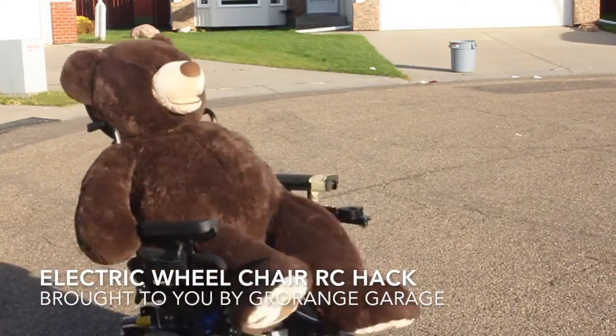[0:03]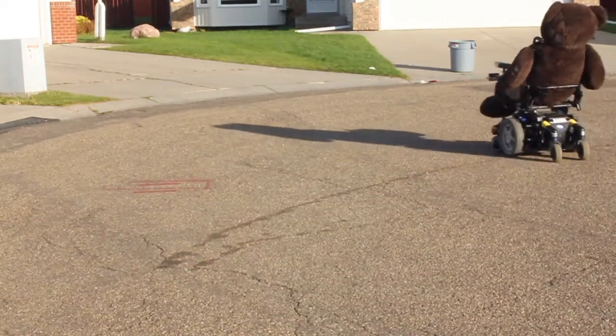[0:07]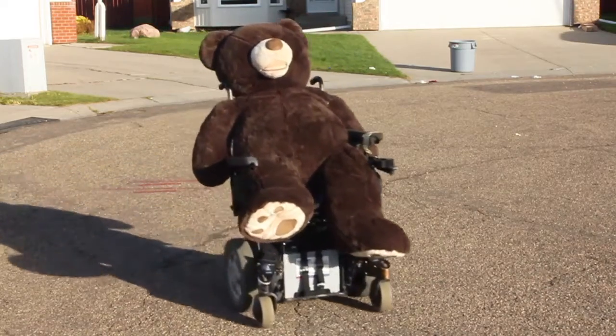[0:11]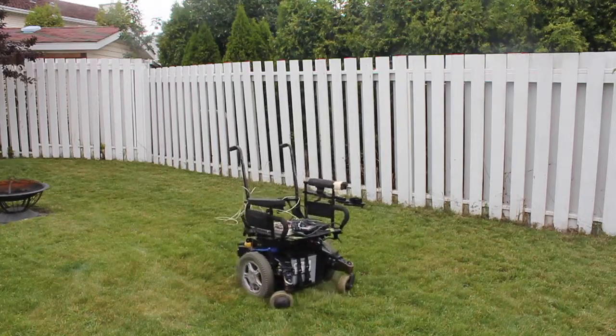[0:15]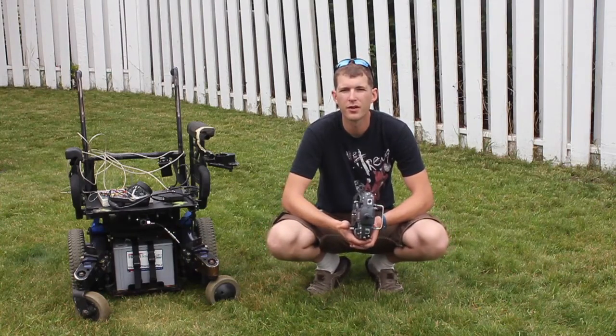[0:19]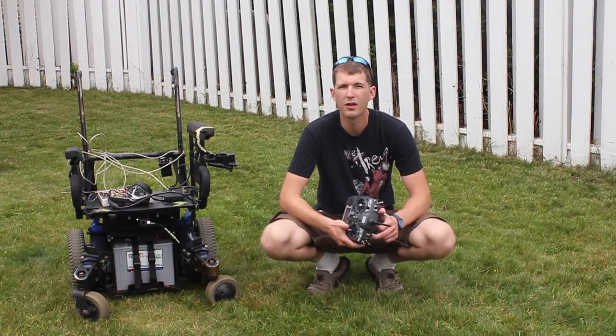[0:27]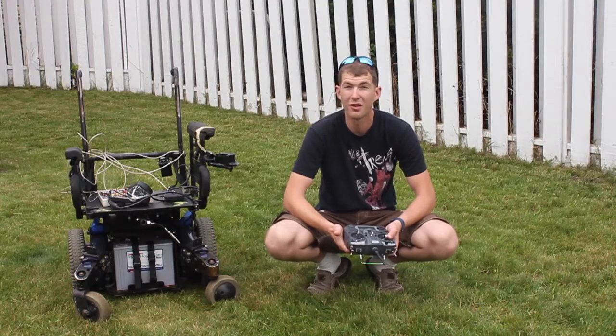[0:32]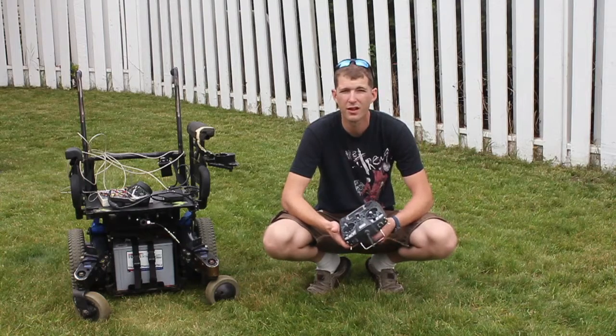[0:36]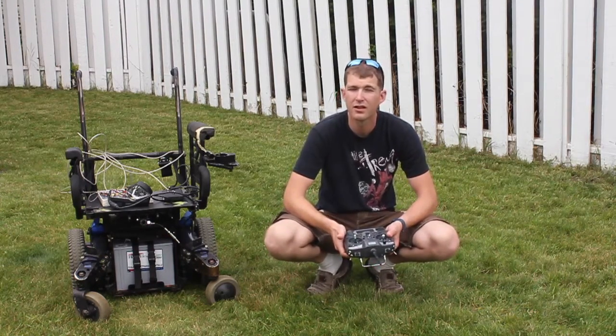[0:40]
I wanted to share my latest project with you. I'm working towards building a remote control lawnmower. So the first step in that is to come up with something to push the lawnmower around. I initially found some things online where guys have used wheelchair motors to do that. So I started looking in that direction.
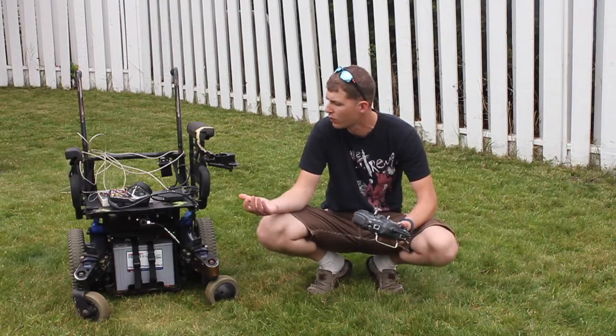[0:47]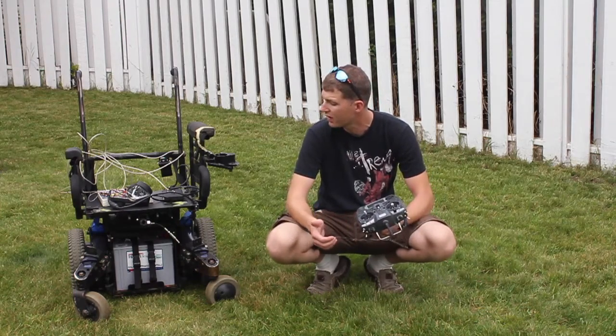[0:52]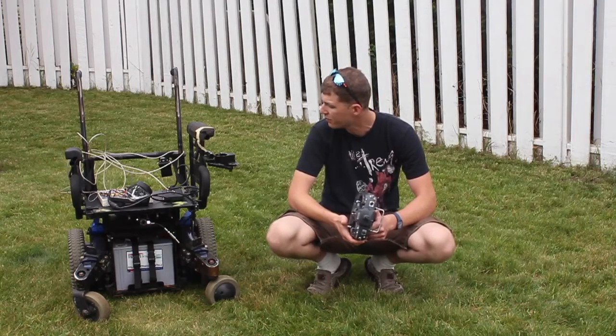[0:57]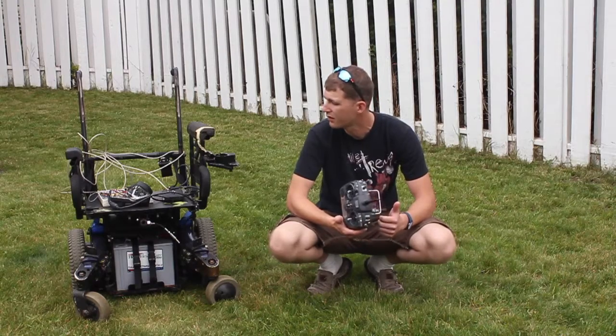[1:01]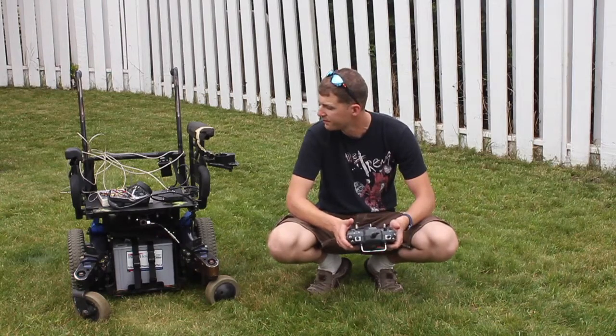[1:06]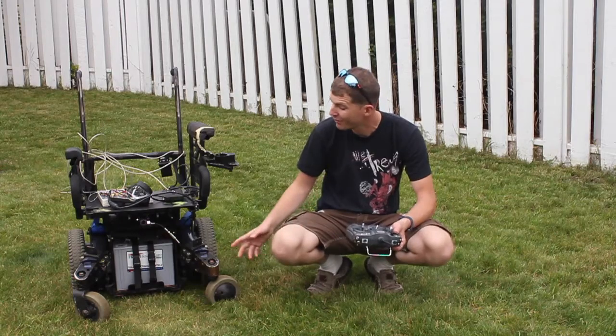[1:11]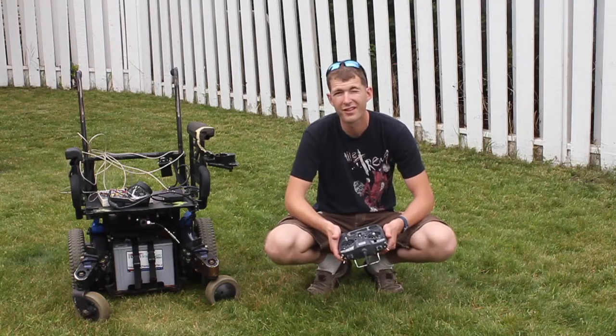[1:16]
While I was looking for wheelchair motors, though, I actually stumbled across a whole wheelchair for really cheap. So I ended up picking up an Invacare Storm TDX5. It's got brushless DC motors, which would have been very tough for me to control without the chair's built-in controllers. Heck of a deal. But as you can see, it doesn't have any cushions or any foot pedals or any of that stuff, which was part of why I got such a good deal on it.
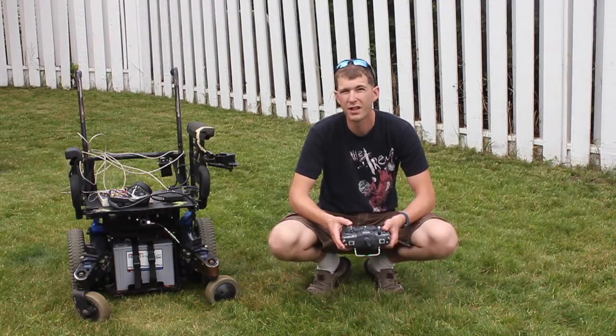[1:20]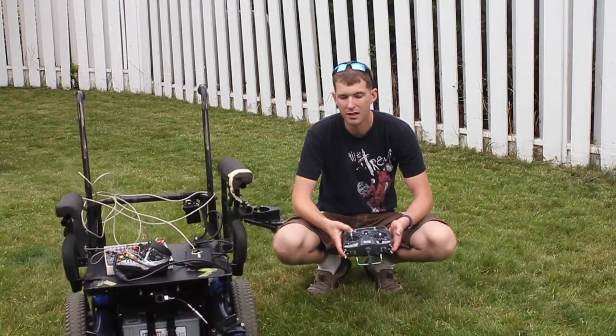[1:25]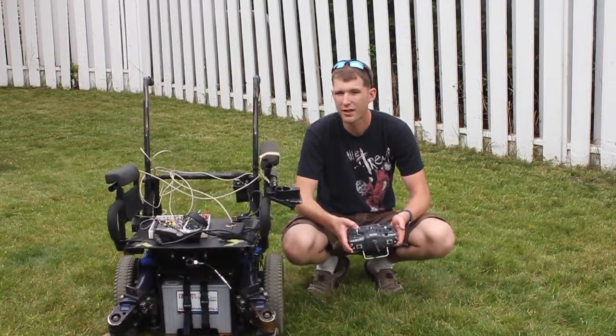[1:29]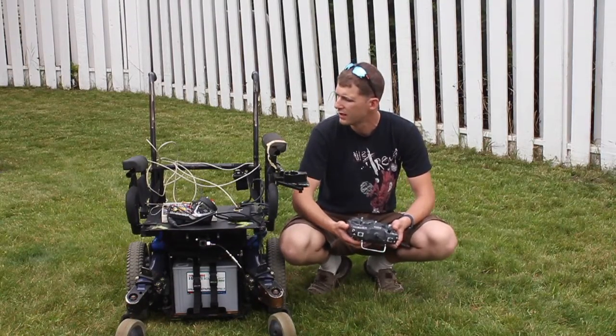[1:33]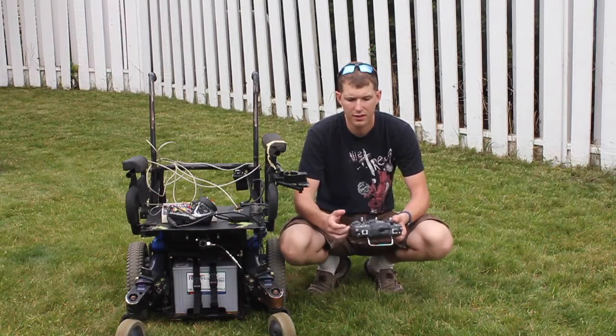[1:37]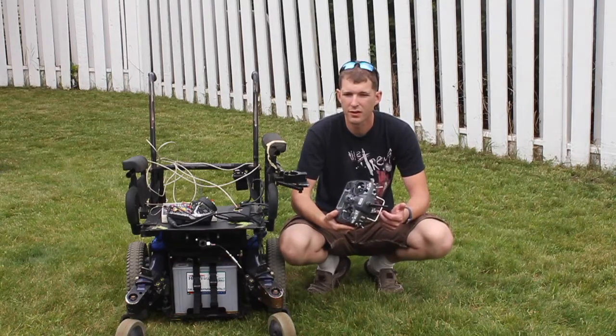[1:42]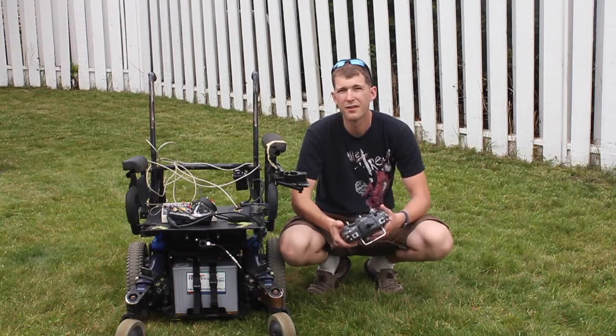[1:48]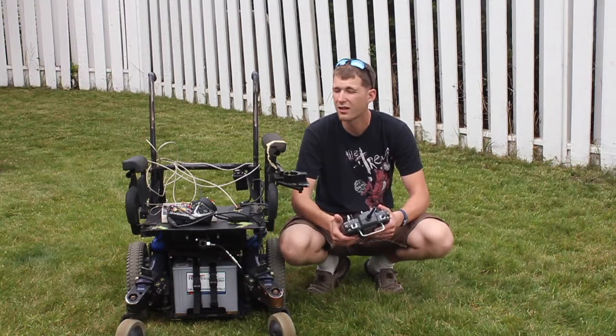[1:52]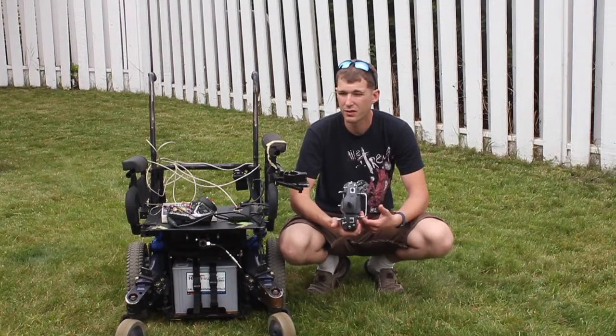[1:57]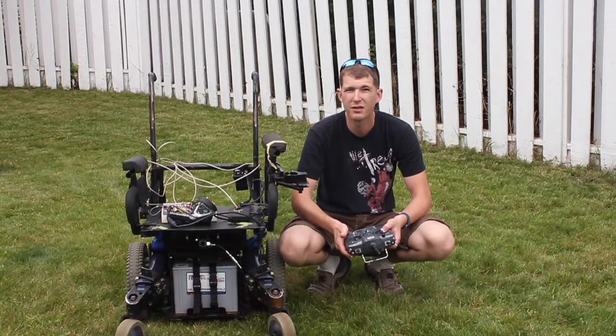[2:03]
Anyway, after some tinkering and messing around, I did manage to get it to work. So I do have a remote control electric wheelchair right now. So how did I do that? Well, I used an Arduino microcontroller. Basically, it's receiving the RC outputs from the controller, doing a little bit of math on it, processing the signal and then outputting the joystick control. So it's replicating the joystick on the controller. This lets me use all of the built-in safeties and regenerative braking and all that good stuff that this chair has built into the controller, while getting RC control.
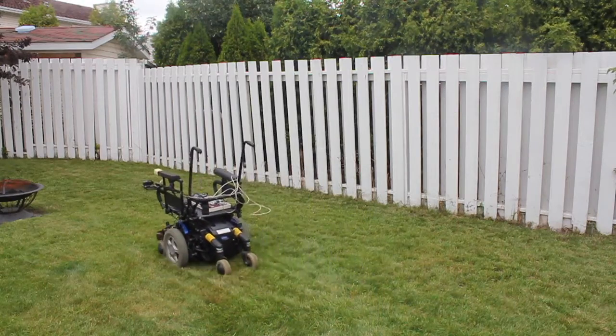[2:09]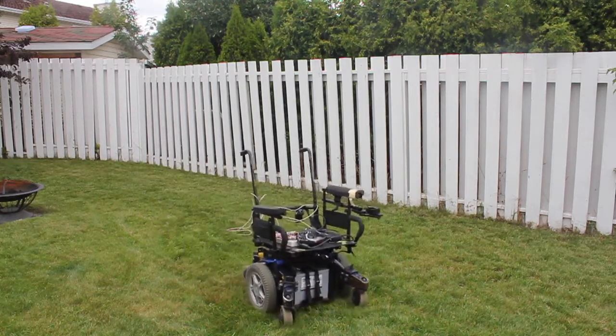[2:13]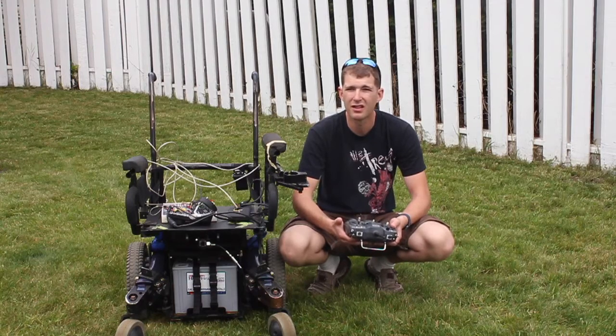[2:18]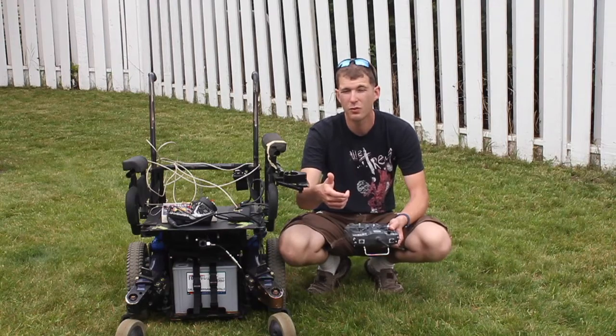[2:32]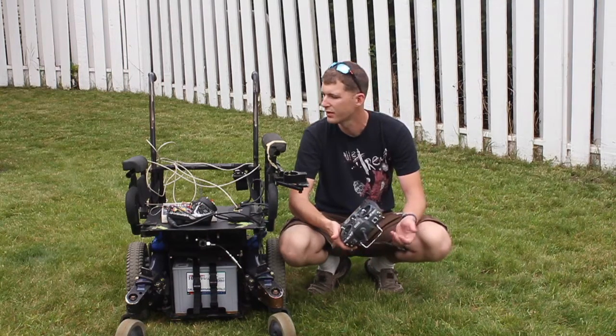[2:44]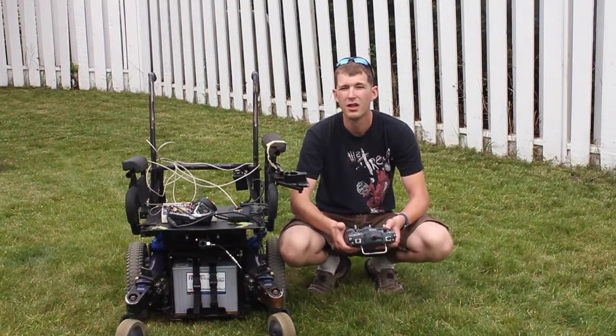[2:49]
The joystick controls are actually fairly easy to replicate. They're based around 2.5 volts. There's four inputs that you need. So there's forward, reverse, and then there's an inverse of that. Neutral is 2.5 volts, and full forward is 3.5 volts on one signal, and then 1.5 volts on the other signal. And then left right works the same way. So it's all based around a 2.5 volt neutral, and then it's either plus 1 volt or minus 1 volt. So I was able to use the pulse width modulation on the Arduino Uno with a resistor and a capacitor to smooth out the voltage so that the chair would accept it and not throw a fault, because it can be somewhat picky over what it receives.
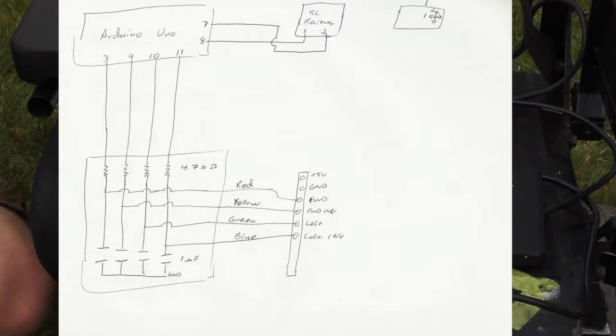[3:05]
Anyways, for those of you who want a little bit more detail on how it works, I'll show you what my circuit looks like. So I've got my Arduino Uno, using inputs 7 and 8 for the RC receiver, using channels 1 and 2. Channel 2 is forward reverse, channel 1 is right left from the RC receiver. From there it goes into the Arduino Uno, which uses pin interrupts to capture that signal as the RC signal changes.
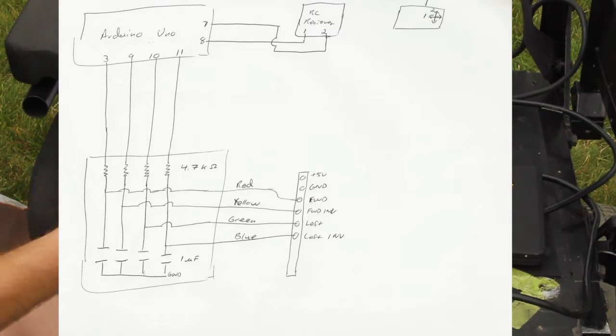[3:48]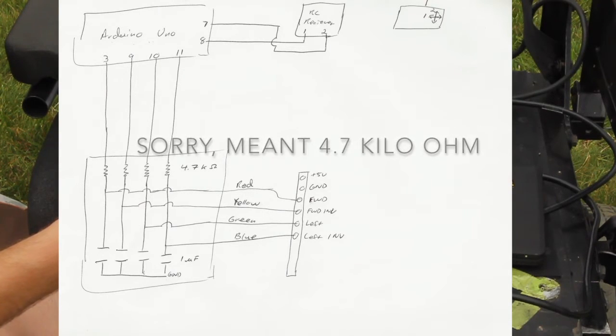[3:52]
And then I'm using outputs 3, 9, 10, and 11 on the Arduino Uno set up with pulse width modulation. That goes through a 4.7 kilohm resistor and then off to the appropriate input on the joystick connection to the chair. And then I've got a 1 microfarad capacitor and then off to ground. So that's my circuit in a nutshell.
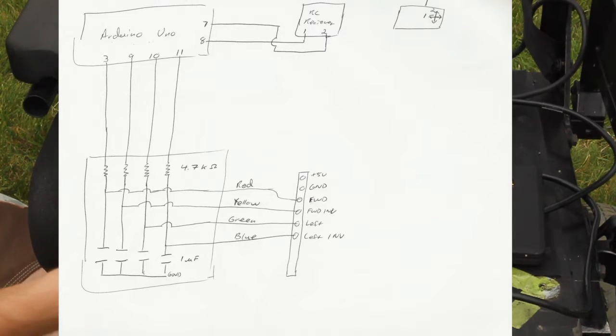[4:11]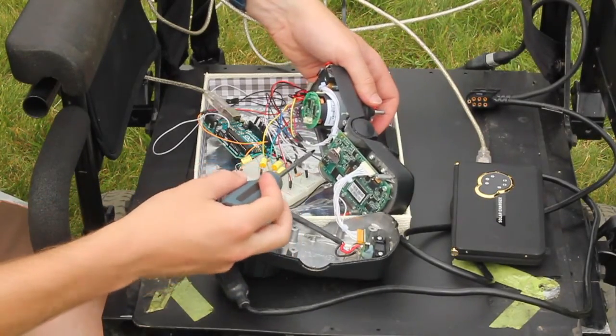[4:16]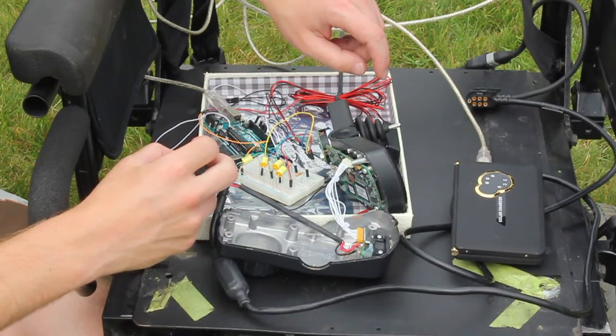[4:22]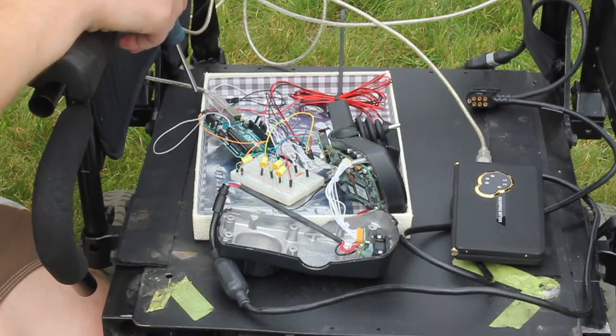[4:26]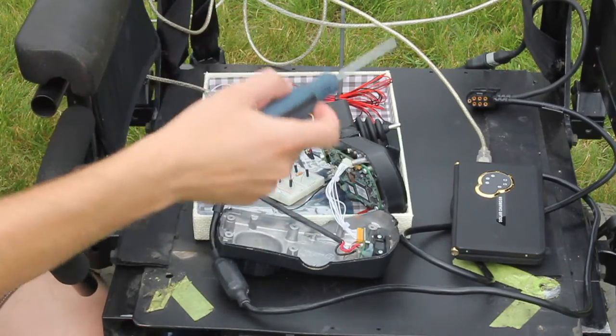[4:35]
So what does that actually look like? Well, here's the controller. Here's the joystick input that I'm replicating. There's my breadboard with my capacitors and my resistors. And then I've got my Arduino Uno here with the appropriate pins. Right now it's all just breadboarded, so it's kind of makeshift at the moment. And for power for the Arduino, I'm just using this little battery power pack at the moment.
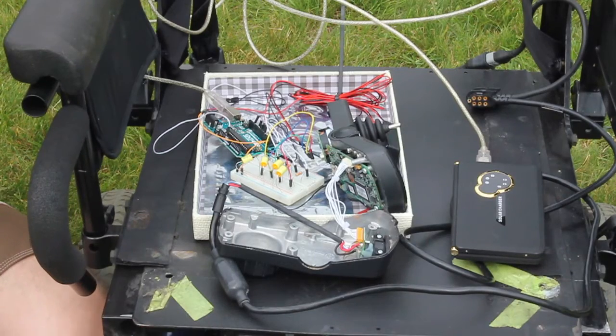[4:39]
One thing I will note too is on the safety aspect: this is a big heavy machine, and if you do try to do this at home, be very careful with it, because it will do up to 7 miles an hour and probably weighs 250-300 pounds, so it can go crashing through fences or seriously damage property and people. That's my safety note.